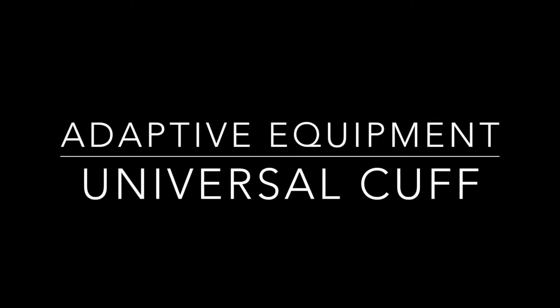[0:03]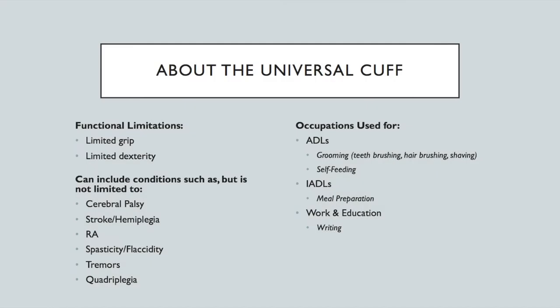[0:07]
Hi everyone, so today I'm going to be showing you how I made a homemade universal cuff. As most of you know, a universal cuff is a piece of adaptive equipment that's worn on the hand to help an individual hold items such as eating utensils or grooming supplies to promote independence in ADLs and IADLs. This piece of equipment is especially helpful for people with limited or weak grip and limited dexterity.
The piece of equipment can be used with persons with some of the following conditions, and this is not an exhaustive list. So it could be used with people who have cerebral palsy, stroke or hemiplegia, rheumatoid arthritis, spasticity, tremors, or quadriplegia.
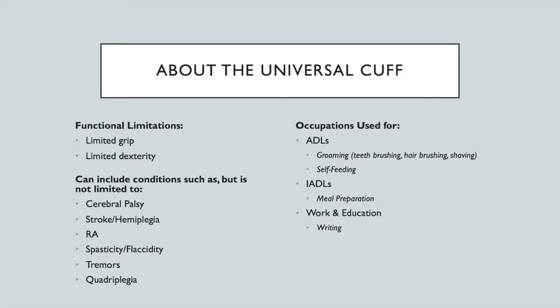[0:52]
And as I briefly mentioned in the definition of a universal cuff, the cuff can be useful for several different occupations. It can be helpful for self-feeding, so a person may choose to put their fork or spoon in the cuff. It can also be helpful for grooming, as it can hold a toothbrush, a razor, or a hairbrush. And then it can also be useful for meal preparation because it can hold spatulas or spoons. And then lastly, it can be useful for occupations that involve writing, as the person can put a pen or pencil inside the cuff.
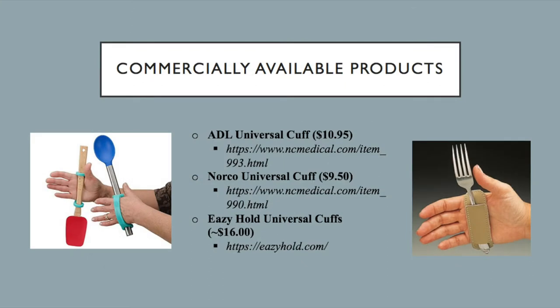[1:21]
So as most of you are probably aware, there are several commercially available products for the universal cuff. And doing just a simple search on Amazon brings up a variety of products that range in prices from approximately $9 and up. So the picture on the left is the Easy Hold Universal Cuff, and this is just a silicone cuff that can slide onto a handle. And it comes in a variety of sizes and colors so that it can be used with different tools.
Then the cuff on the right is the Norco Universal Cuff, and again, just a cuff that we've all probably seen several different times. So the problem that I saw with some of these commercially available products is that you might not be able to slip different utensils in because of the width. So I wanted to create something that would provide versatility for different occupations so that something like a spoon could go in, but then also something like a hairbrush could fit in there as well. So that's one of the differences that you'll see in the cuff that I made.
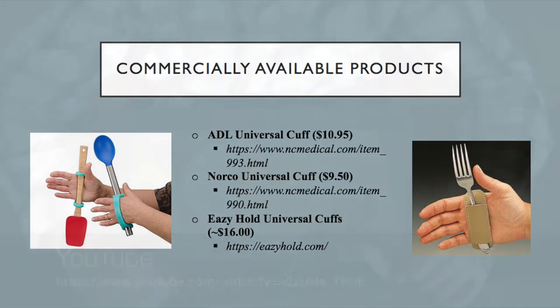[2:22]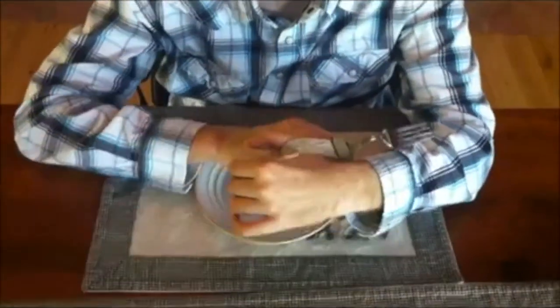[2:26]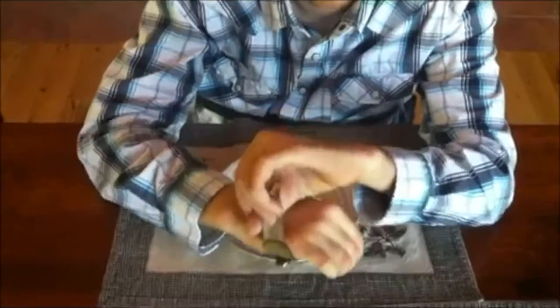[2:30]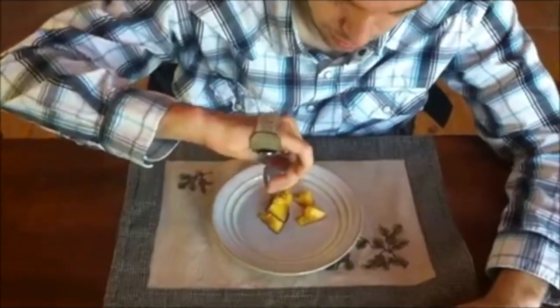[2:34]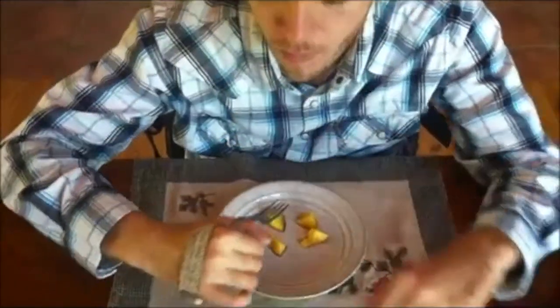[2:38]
Because I did not have access to a commercially available universal cuff, this is just a video that I found on YouTube of an individual with quadriplegia using the universal cuff for self-feeding. And there he just demonstrates the ease with which he can slide the cuff on and off and also participate in the occupation of feeding.
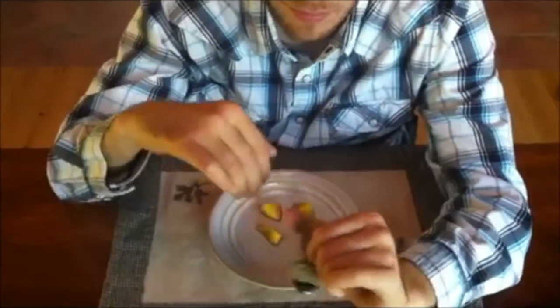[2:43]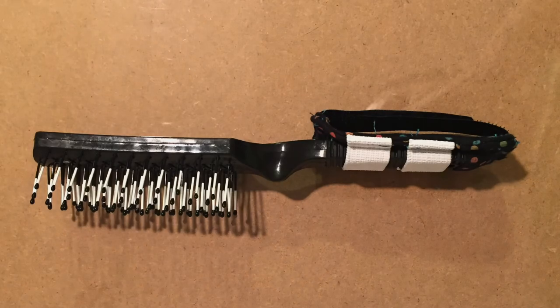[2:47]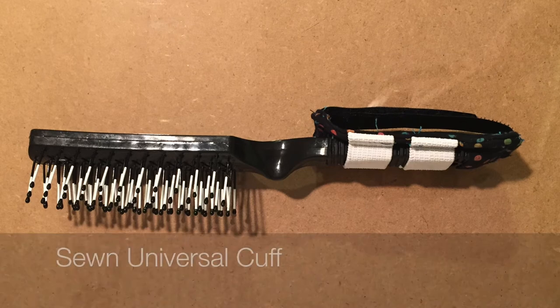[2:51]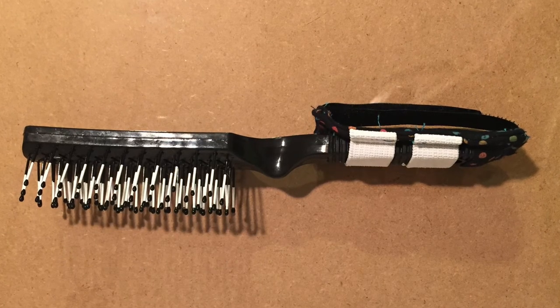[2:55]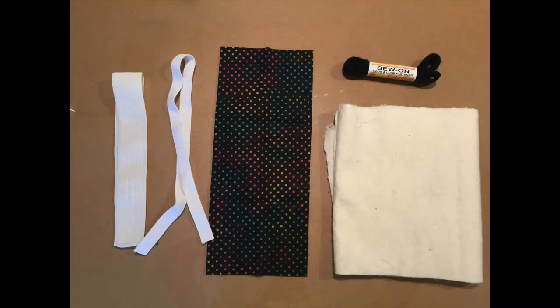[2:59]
Now I'm going to move into a discussion on my homemade universal cuff. The homemade universal cuff that I made was sewn, and I used products that I had in my home, which included a scrap of fabric, a scrap of batting, some Velcro, and some elastic. And although I had these materials in my home, they can be easily purchased at a Joann Fabrics for relatively cheap.
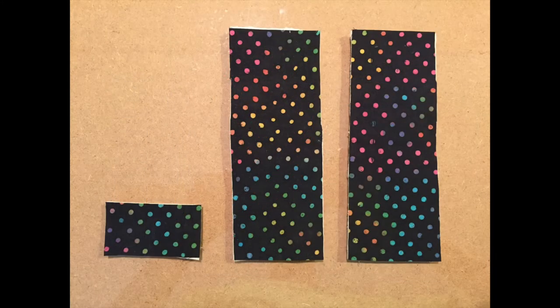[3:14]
So to start, I cut two big rectangles, about 3 inches by 7 inches, and one small rectangle, about 3 inches by 4 inches, out of both the fabric and the batting. Then I layered each rectangle of fabric with a layer of batting.
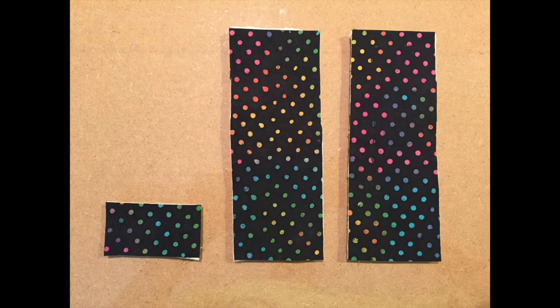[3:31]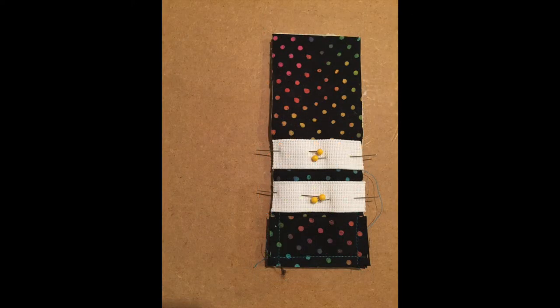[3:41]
So then the first step of sewing was to fold the small rectangle in half and to sew it so that there was sort of a pocket at the bottom, which is where the end of the utensil can slip into. Then once I sewed that on, I cut two pieces of elastic to the width of the rectangle and I pinned them on just above the pocket. So this would serve as where the handle of the utensil would slide in.
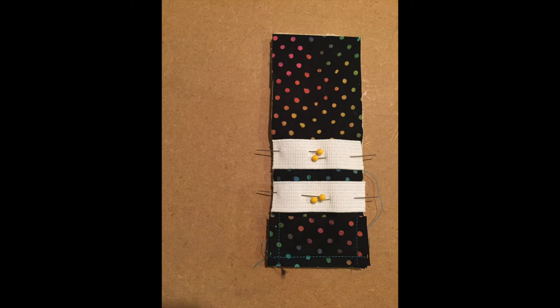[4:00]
After I pinned on the elastic and the pocket was on, I stacked the two pieces of long, bigger rectangles together to create sort of a sandwich, so that when I sewed it and then turned it right side, the fabric would be on the outside. So I created this sandwich and put the rectangles together, and I sewed around the two long edges and one
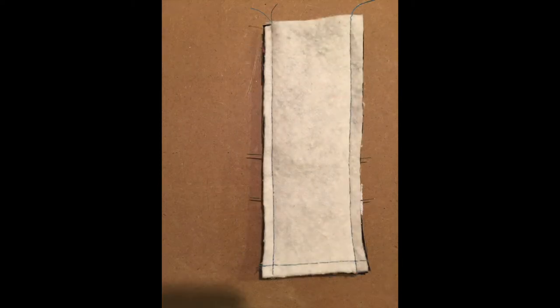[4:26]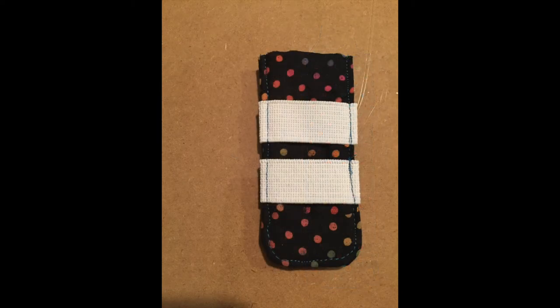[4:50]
short edge. And after I sewed around those three edges, I flipped it inside out, so that the fabric was on the outside. And essentially, I had the basis of my cuff then. So after I did that, I cut off the excess fabric at the top of the cuff above the elastic so that it would be about the width of a client's hand.
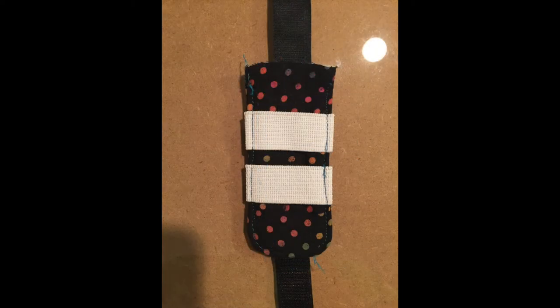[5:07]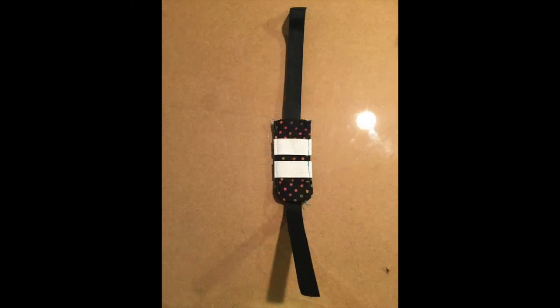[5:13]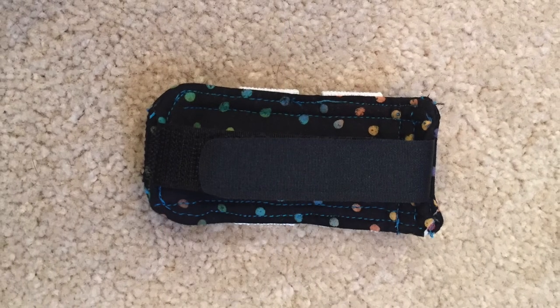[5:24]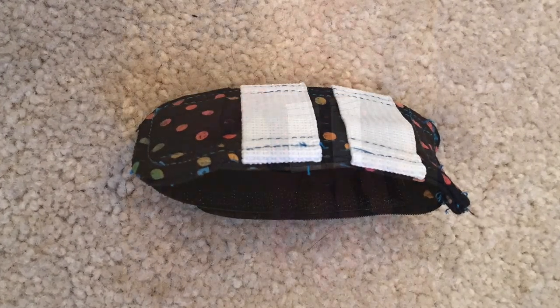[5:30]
After doing this, I sewed around the edges to sort of flatten out the cuff and to make sure that the elastic was tight. After all of that was complete, I cut two pieces of Velcro, one hard and one soft, and I placed the hard Velcro facing up on the bottom side near the pocket, and I placed the soft Velcro facing down at the top. And so this would then allow the client to have the harder facing out to allow it to be more comfortable, and the soft fabric just went down over top to create that cuff.
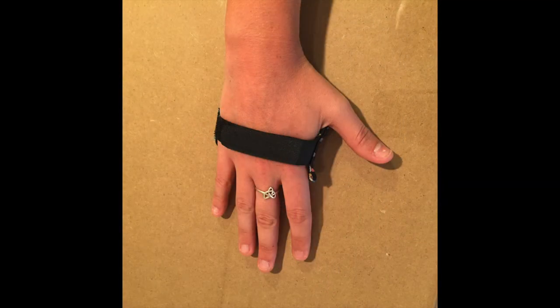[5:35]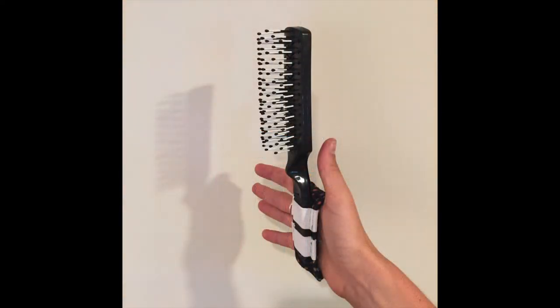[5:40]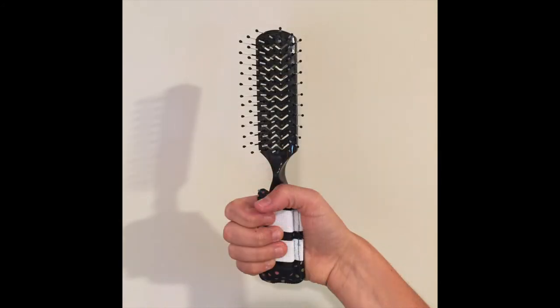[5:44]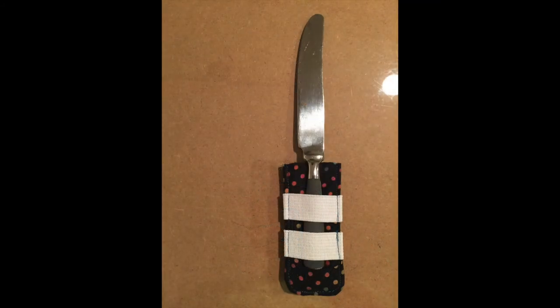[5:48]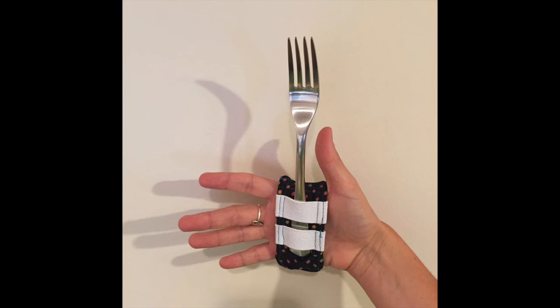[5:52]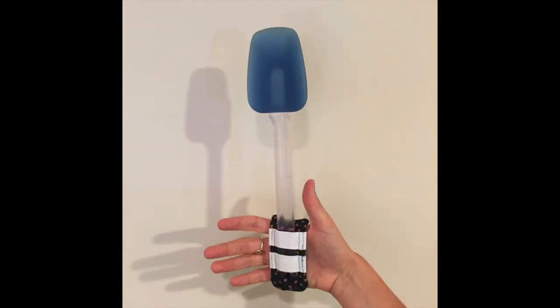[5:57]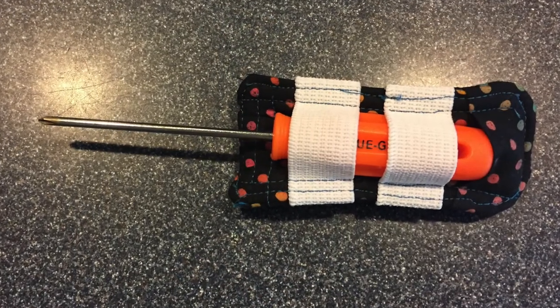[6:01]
And even though I used Velcro and I didn't use a D-ring, it could be something that once it's fit to the client's hand, they could just slide it in and off. They wouldn't need to use the Velcro. So once the Velcro was placed, I then sewed it in so that it would be secure. So after that, I cut around the Velcro to make sure it was an appropriate size, and I rounded the edges to allow for comfort.
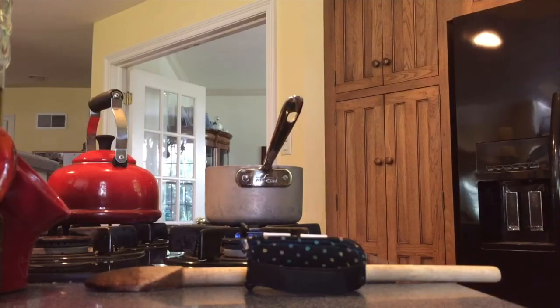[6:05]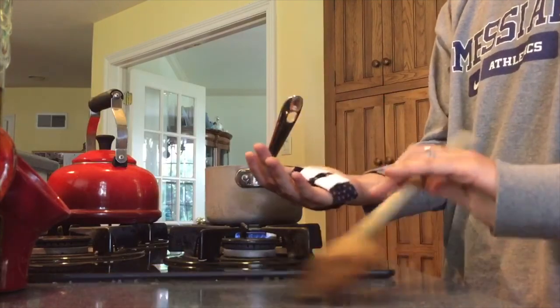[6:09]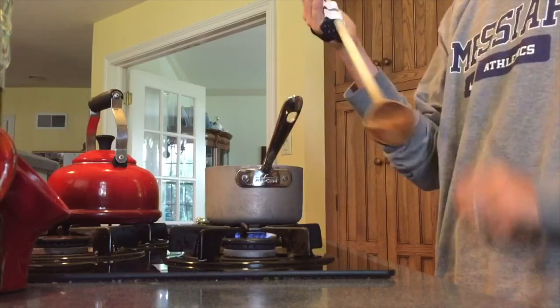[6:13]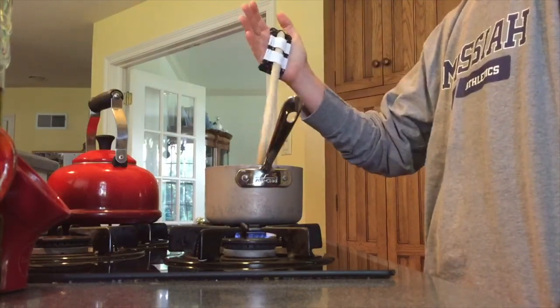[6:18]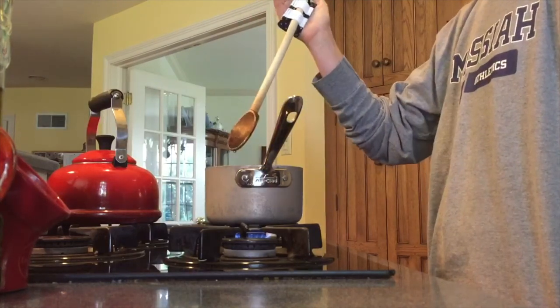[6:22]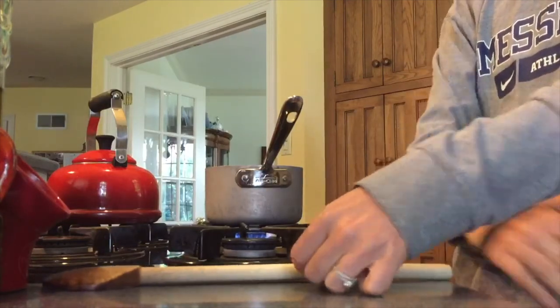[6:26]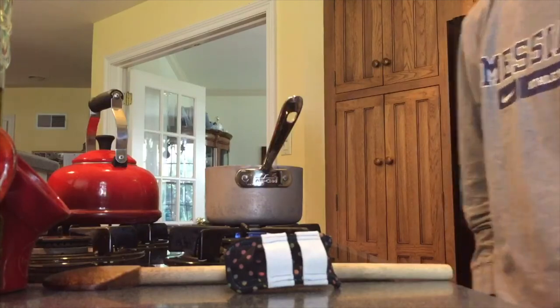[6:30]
Now I'm going to move into a brief demonstration of using the universal cuff during occupations. First, I use the universal cuff during meal preparation. And as you can see, the universal cuff was already fitted to my hand, so I did not need to adjust the Velcro, and I could easily slide it on to stir. In this case, the universal cuff is facing down so that I can complete the occupation of stirring and cooking, but later it will be facing up while I do hair brushing.
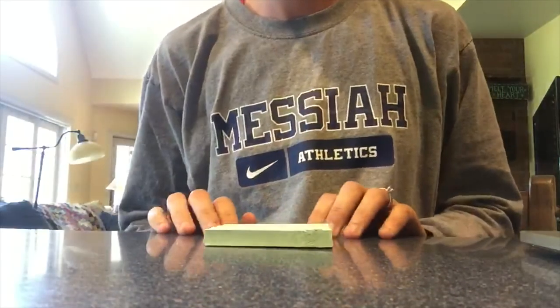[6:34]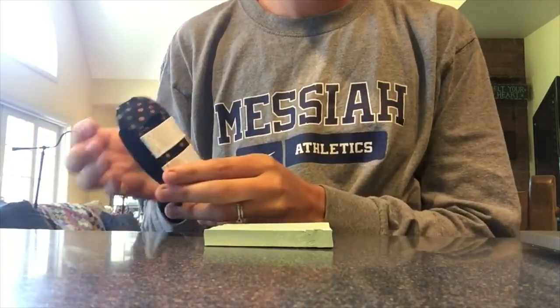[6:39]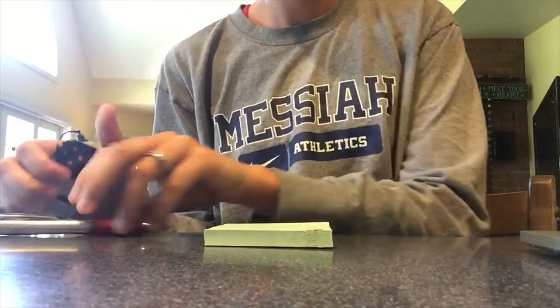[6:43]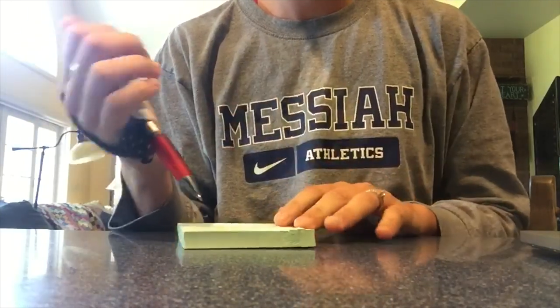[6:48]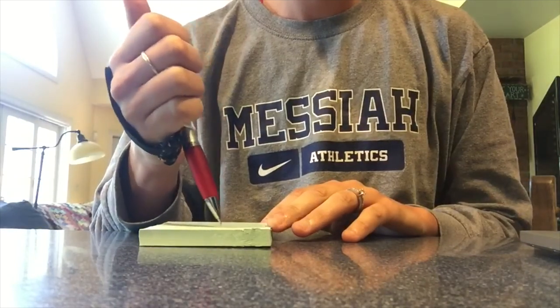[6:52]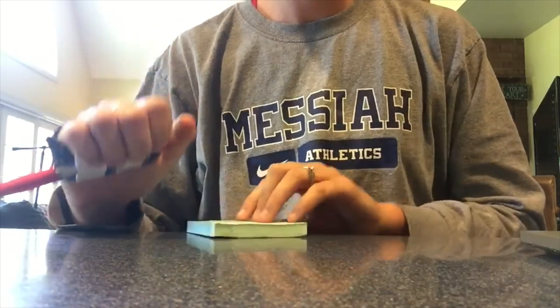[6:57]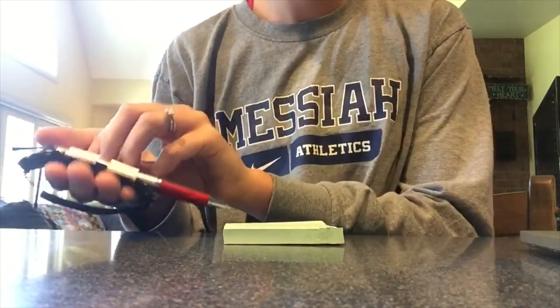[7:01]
Next, I'm going to show you handwriting. And again, the universal cuff was already fitted to my hand, so I could easily slide it in and slide the pen into the cuff. One thing that is unique about the design I created is that the elastic allows for utensils with a variety of different size handles to be used. So something with a thicker handle, like a hairbrush, can be used, but so can something smaller like a pen or a pencil. And then lastly, I would just like to note that this cuff can still be created even if an individual does not have sewing experience, as they can use something like fabric glue.
So this is the last portion of my video, and this time I have my universal cuff with my hairbrush. And so if the client is not just slipping it on, they would just simply put the Velcro up over and strap it off. But then once it's set, it's pretty easy for them to just slide it on and off. And so then, as you can see, I don't need any grip to be able to use this, and I'm able to brush my hair.
And if they had limited range of motion in their shoulder, they could still sort of bend their elbow with it, take it around, they could get both sides, and this would fit on both hands. So if they needed to switch it over, they could simply do that and be able to brush the other side of their hair.